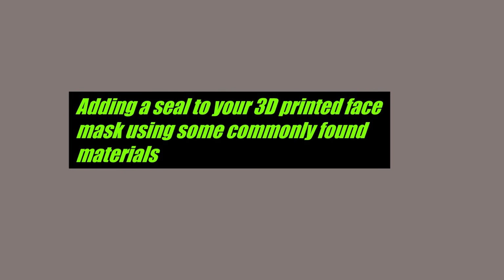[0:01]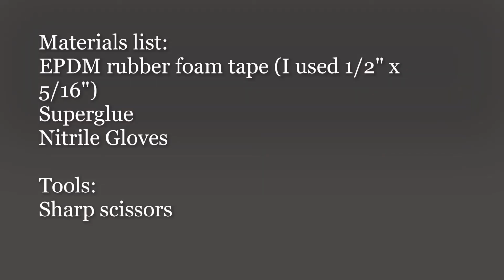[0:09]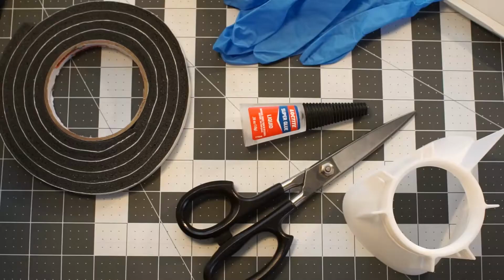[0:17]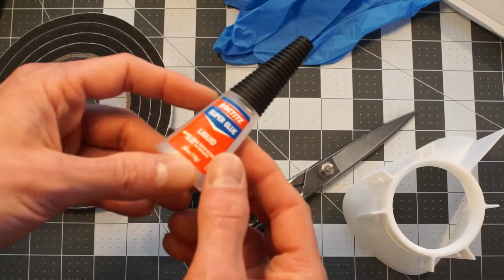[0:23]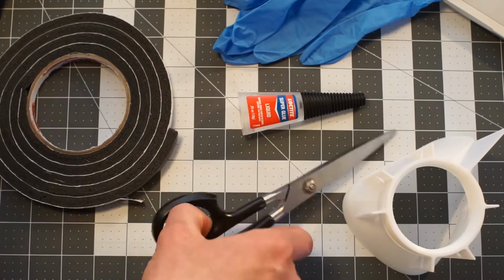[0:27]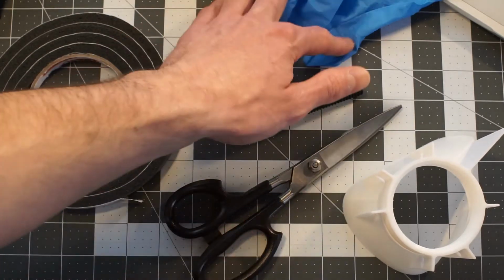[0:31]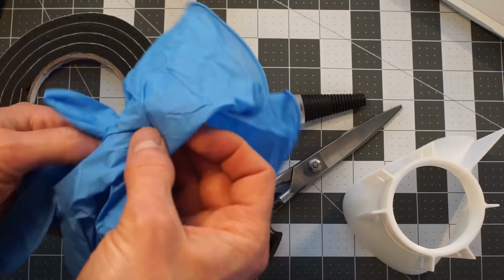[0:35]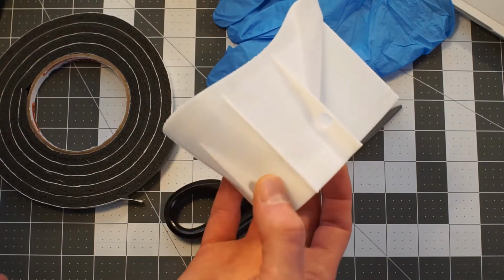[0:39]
Foam window and door seal, a cyanoacrylate glue like super glue or Cypox, a sharp pair of scissors, some gloves to help make sure that you and the mask don't become one, and of course the mask.
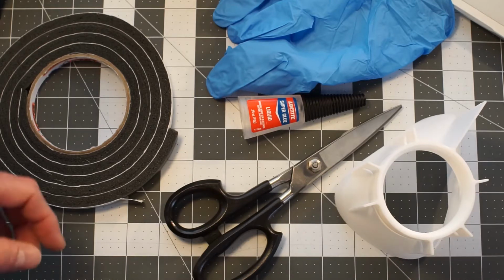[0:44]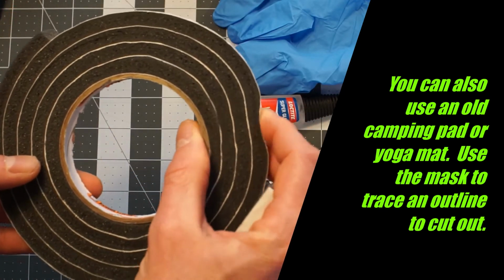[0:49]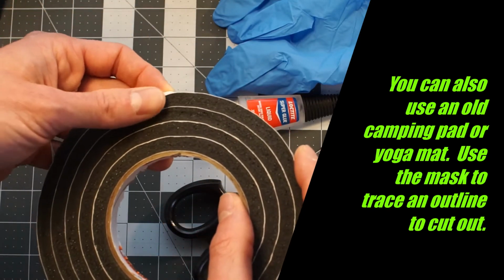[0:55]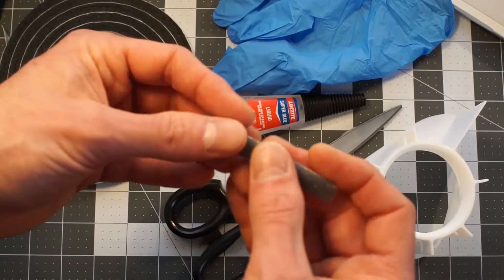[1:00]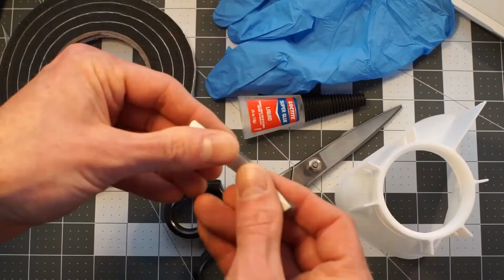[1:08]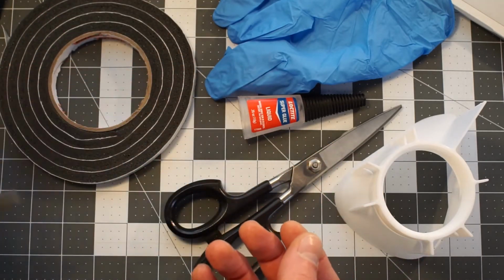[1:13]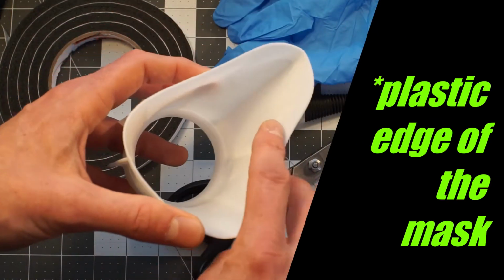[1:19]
Now a note on materials, there are several types of foam. This one here is EPDM rubber foam. It's a closed cell type of foam, and that's the kind that you need to keep any air from getting through. An open cell type of foam, like this, it's almost see-through. Feels like nothing. This stuff will let air go right through and will reduce the effectiveness of any type of seal. In fact, it would be even worse than having the plastic edge of the seal against your face.
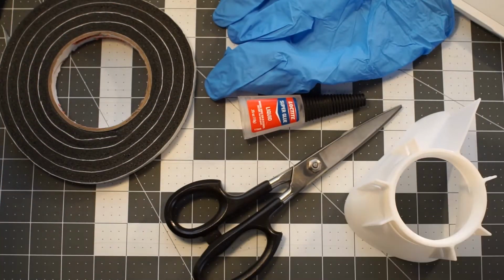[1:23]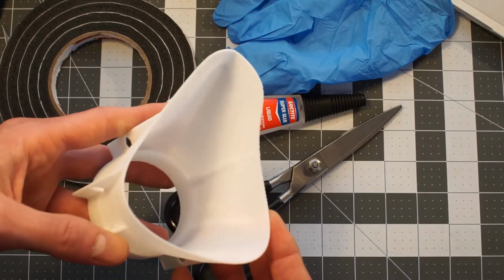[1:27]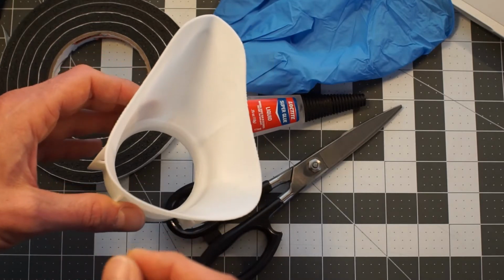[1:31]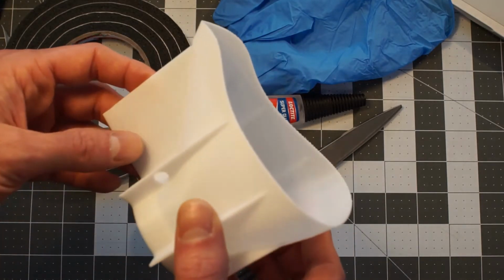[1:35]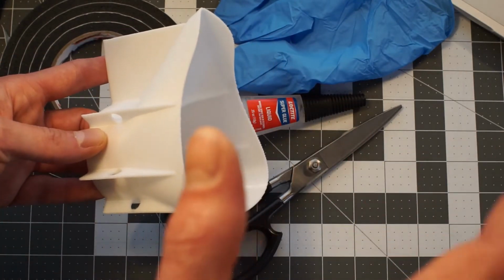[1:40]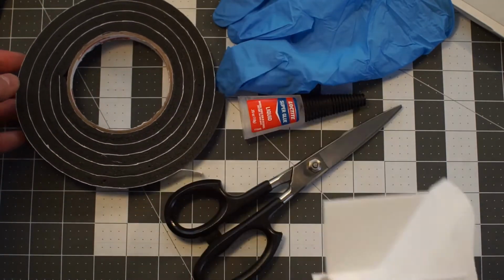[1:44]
So the first step is going to be to take the mask and make sure that the surface of it is clean. Make sure it's free of oils or dirt or anything like that, because we're going to be sticking the tape on there as well as the glue. We want to make sure that there is a good bond between the foam and the mask.
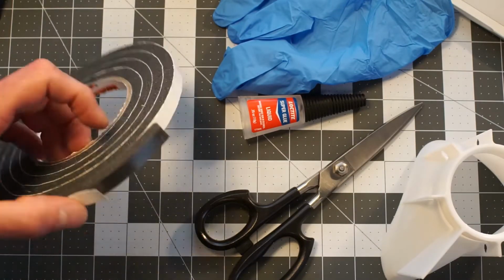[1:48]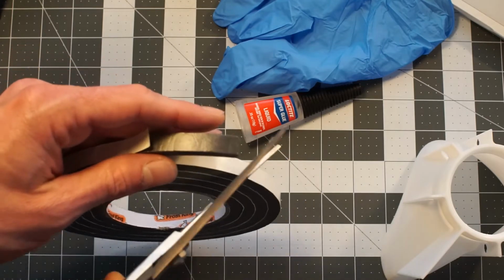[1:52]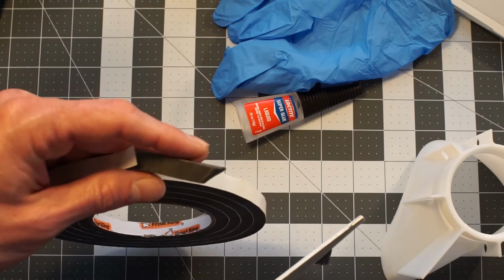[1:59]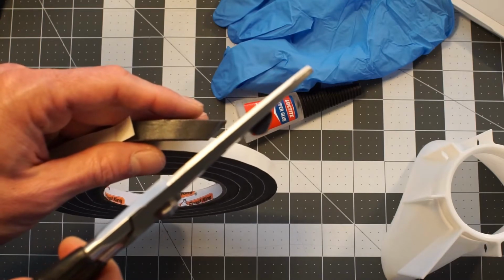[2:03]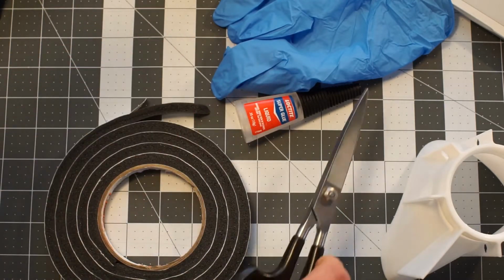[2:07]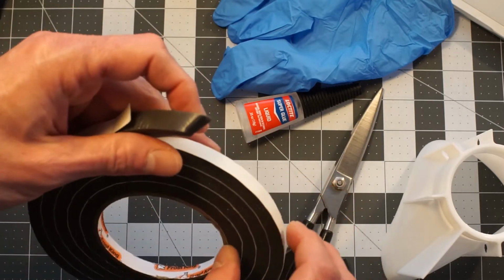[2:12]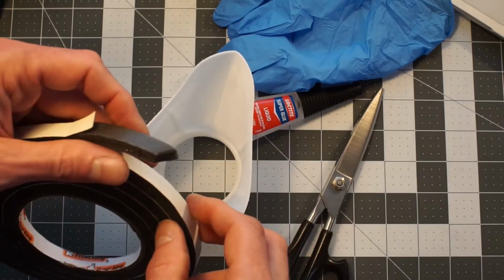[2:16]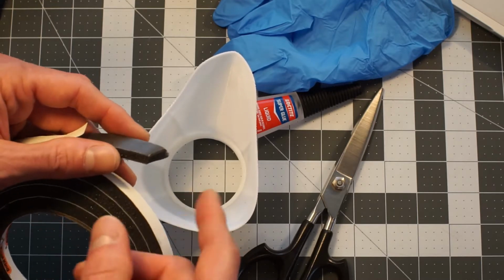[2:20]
Step 2. We're going to take the end of the tape and we're going to start by making a 45-degree cut. Doesn't have to be exact. Just go at an angle there, not perpendicular, just a little bit over like this. What this is going to do is allow for the seam that we're going to have here at the bottom to join in a way that when you put glue between the pieces, it's going to become hard. And what we don't want is that hardness there to, as your face conforms around it, to form a hole on either side that could potentially allow air in.
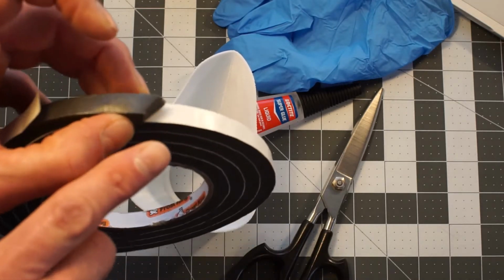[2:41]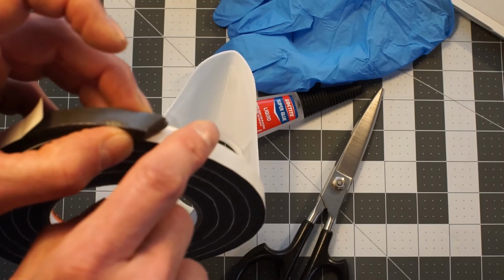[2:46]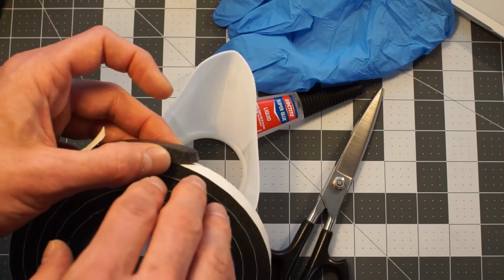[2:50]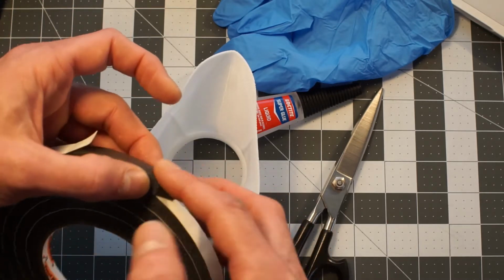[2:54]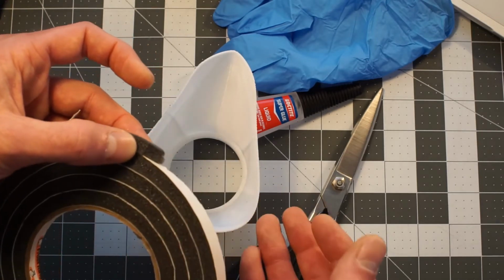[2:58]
By cutting it at an angle, we make it a longer distance to travel for any potential openings there for the air. And so this way there's more of a chance that your face conforms over this seam here and effectively seals you from the outside air.
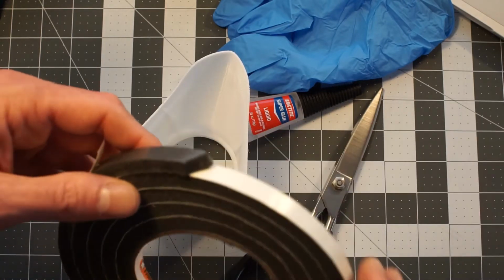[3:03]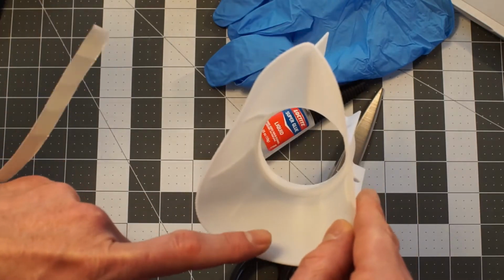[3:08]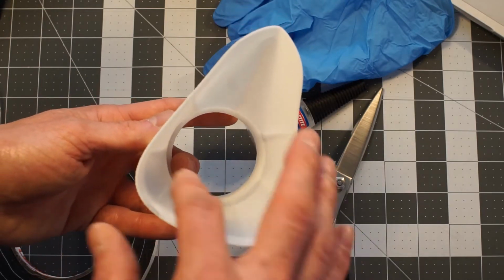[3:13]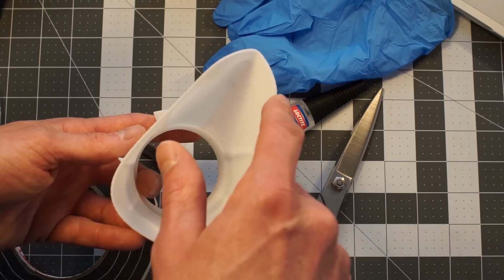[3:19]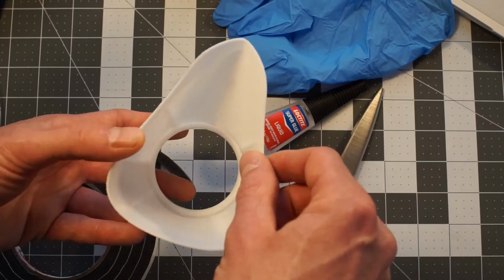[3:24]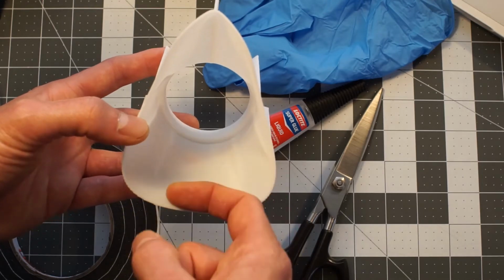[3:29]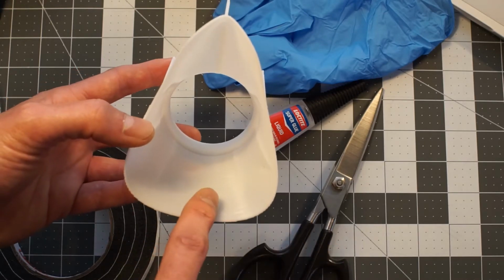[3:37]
Step 3. Take the foam, and we're going to start here at the bottom of the mask. The reason being, faces have a lot of different shapes to them, and around the nose here it can be kind of sharp. Maybe you have some high cheekbones, they're going to push in extra hard on the edges. But generally people's bottoms of their chins are pretty flat. We want that to be, if there's going to be a seam, we want it to be in an area where there is nice even compression along where the seam is. So we're going to start at the bottom.
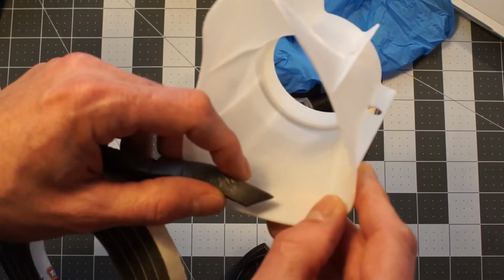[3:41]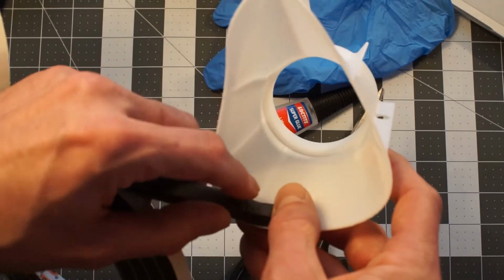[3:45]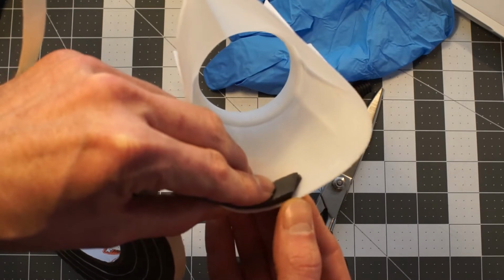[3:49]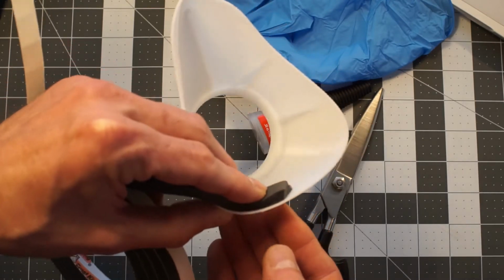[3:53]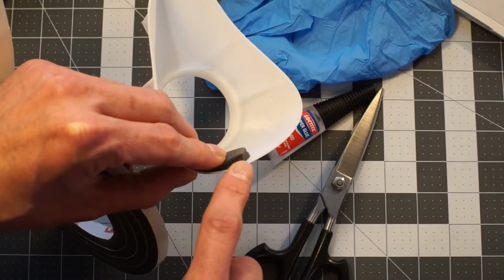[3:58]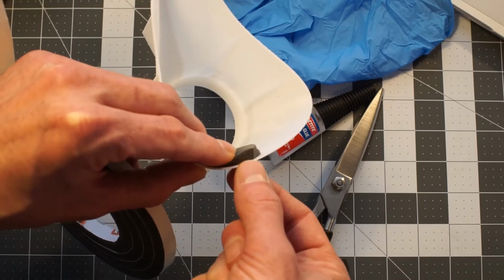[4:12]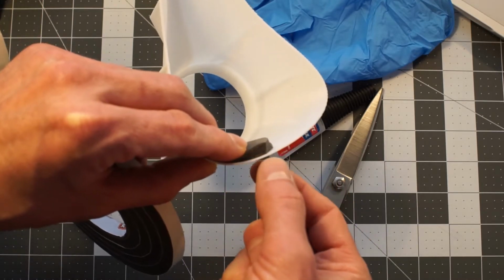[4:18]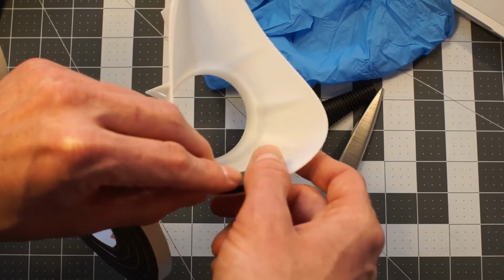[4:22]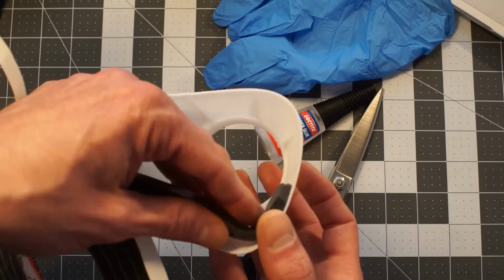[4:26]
And we're going to put it almost to the edge. We're actually going to leave a little bit of a lip, just a tiny one. And the reason being is we're going to take our glue and we're going to be gluing along this outside edge here. And that lip is going to help to keep the glue in this sort of valley between that tiny lip and the piece of rubber here to help for the adhesion so that it's not dripping down the edges or going anywhere else. It's just creating a nice little seam there, almost like in welding, between the materials that you're joining. And so we're just going to go around.
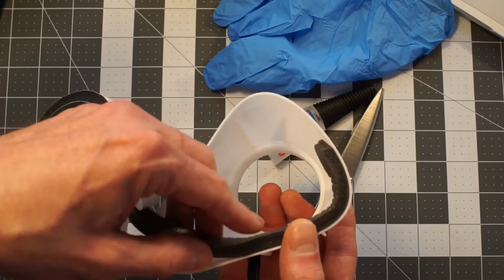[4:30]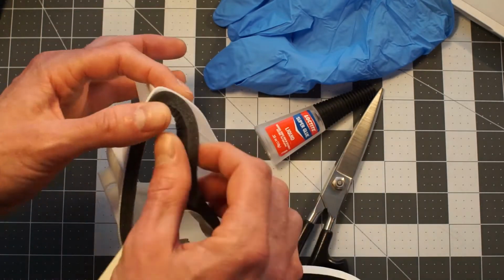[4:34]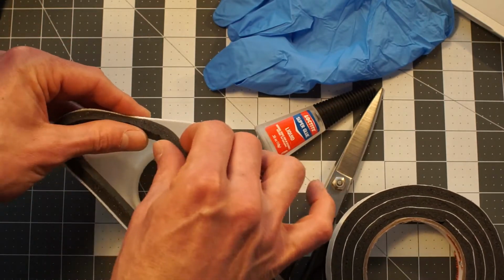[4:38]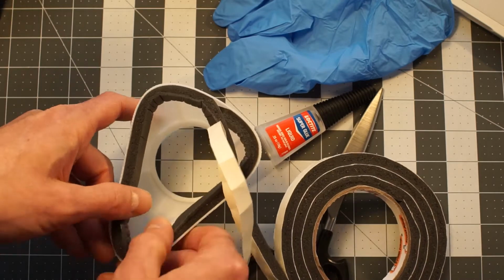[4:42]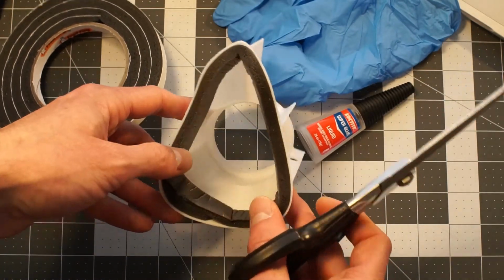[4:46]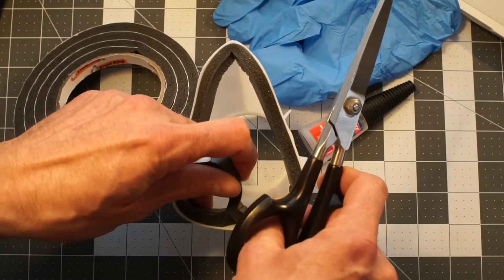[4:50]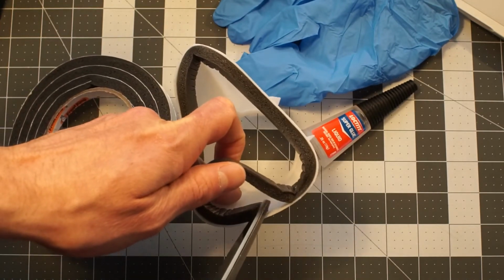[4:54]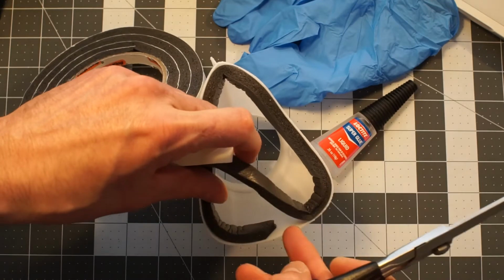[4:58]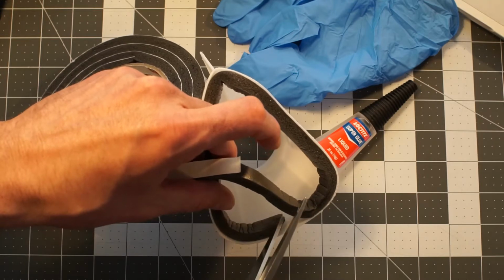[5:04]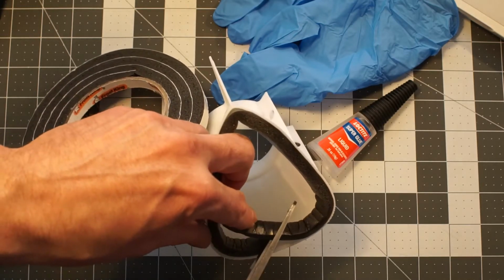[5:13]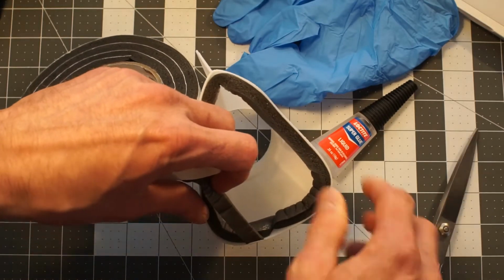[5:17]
Next, we're going to take this piece and we're going to cut it so that it matches this here. We're just simply going to, now that we've come around down to the bottom, before we make it to here, take our scissors, line them up with this edge here at this angle, the same angle here that this piece has. I'm going to take this piece, I'm just going to come straight down.
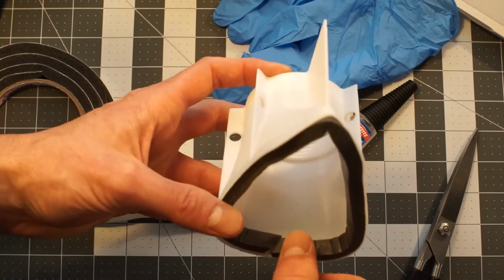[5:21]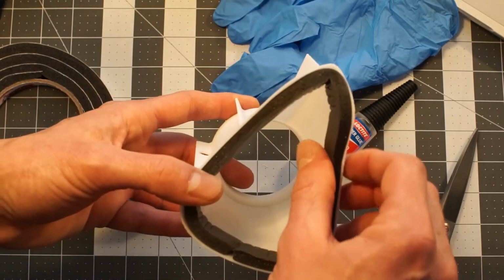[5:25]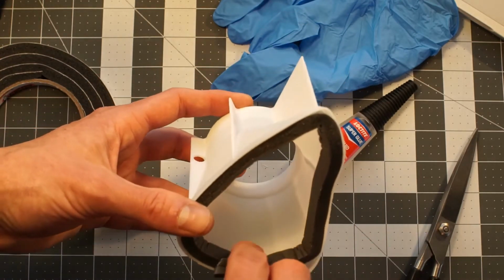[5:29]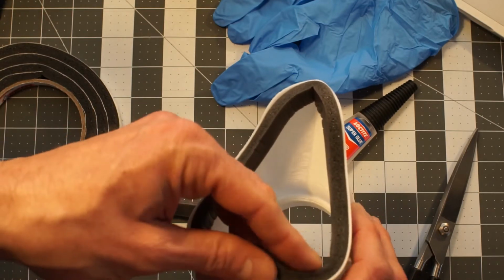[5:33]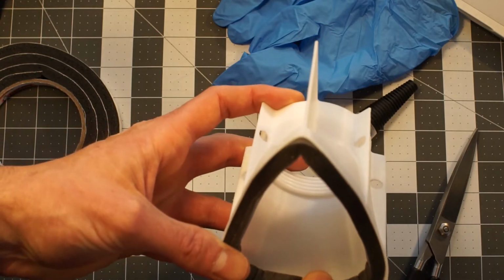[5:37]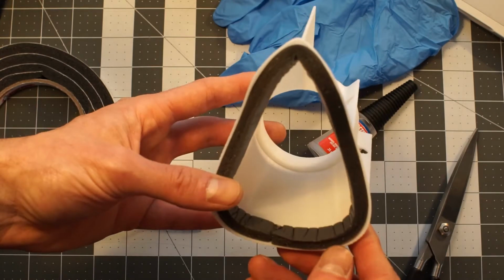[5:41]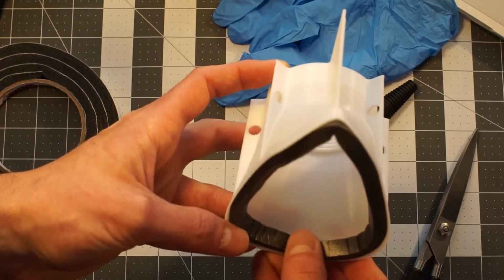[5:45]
Now, there may be a little bit of a gap, or maybe it'll be too long. This piece is pretty stretchy. This material is great in that it's got a little bit of give. And so we can also just kind of work it a little bit to ensure that the pieces line up nicely for where we're going to put the seam. Just like that.
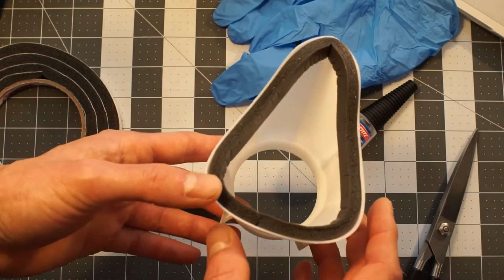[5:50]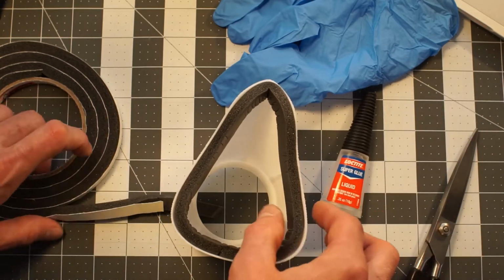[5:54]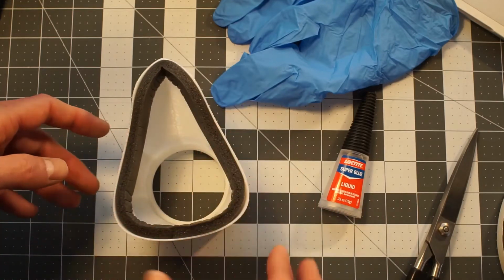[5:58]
The next thing we're going to do is we're going to take our glue, get this out of the way, put on our gloves.
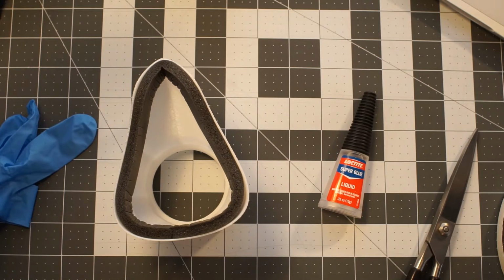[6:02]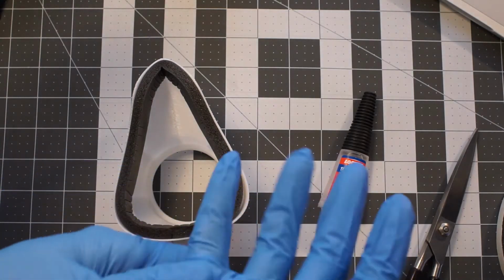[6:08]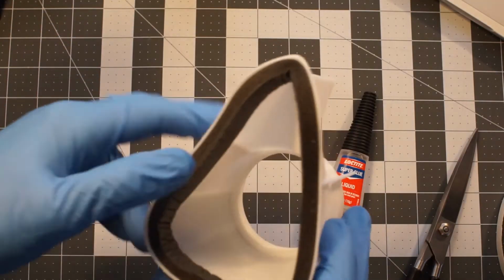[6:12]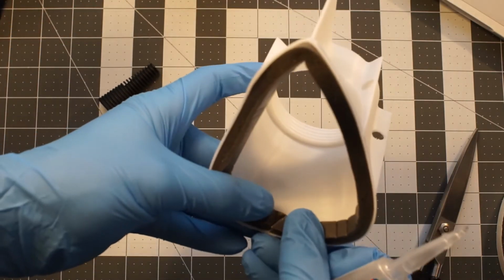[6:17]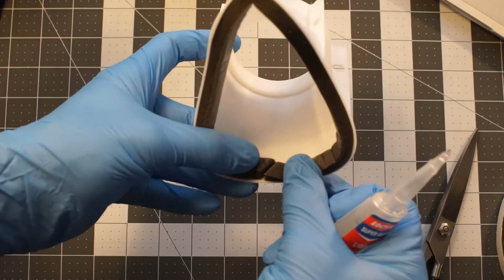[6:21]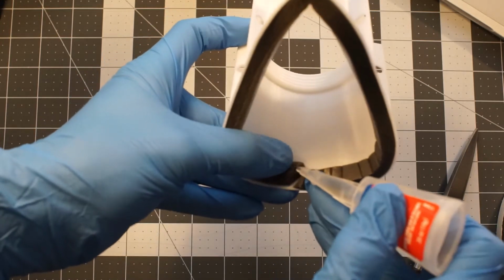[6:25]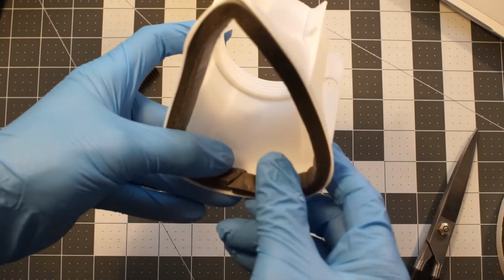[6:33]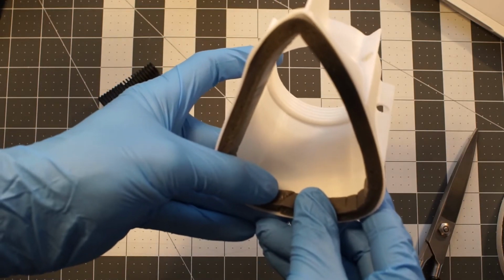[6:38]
We're going to start here at the seam. We're going to pull it apart a little bit like that. Put some glue in there. Push that together. We're going to hold it in place for at least 10 seconds.
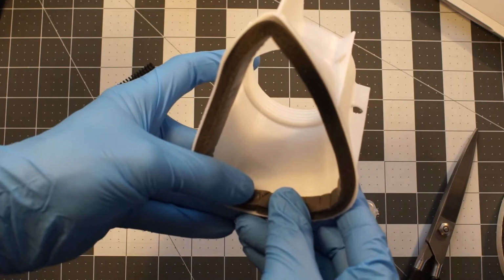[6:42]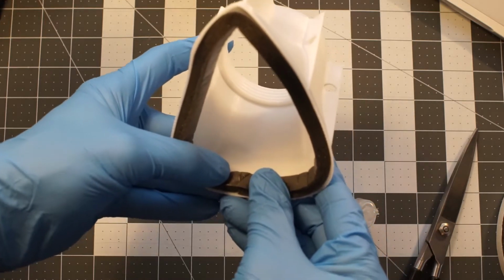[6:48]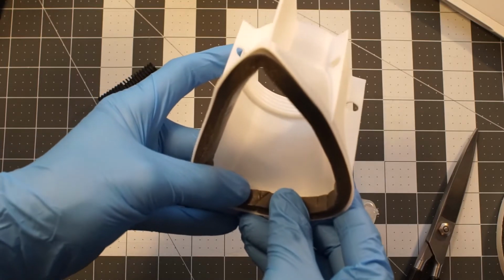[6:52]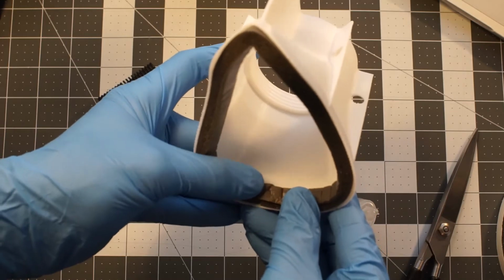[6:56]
Super glue usually takes about 10 seconds to get a nice set in. We'll hold it there for a little bit just to make sure that it doesn't accidentally separate on us or anything. Just try to make sure that those are even at the top there where you've bonded it.
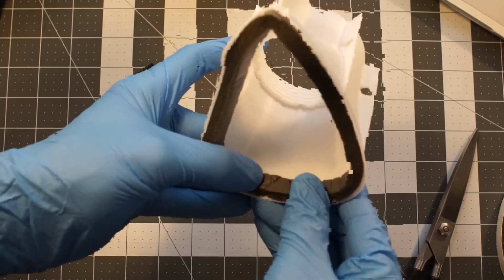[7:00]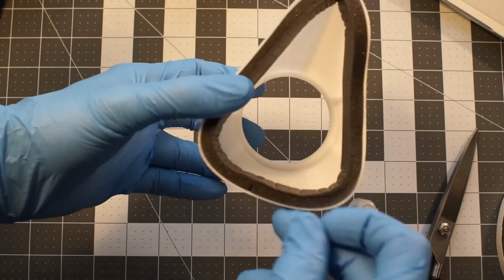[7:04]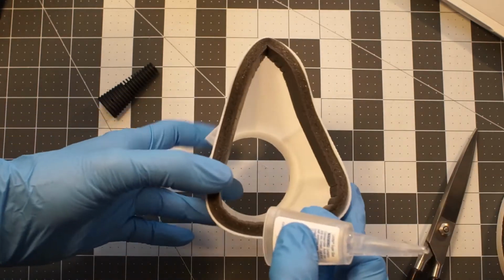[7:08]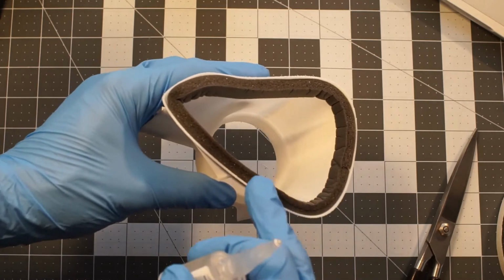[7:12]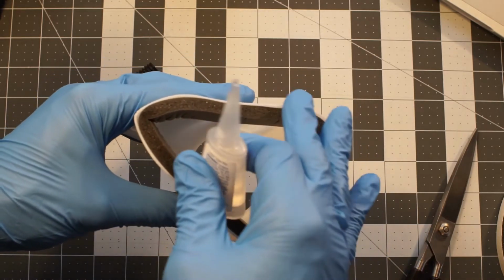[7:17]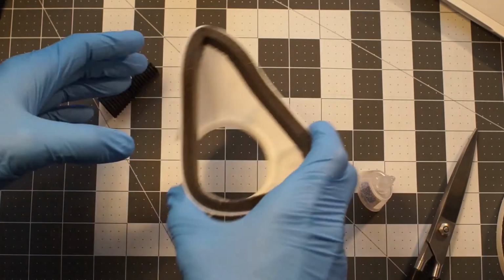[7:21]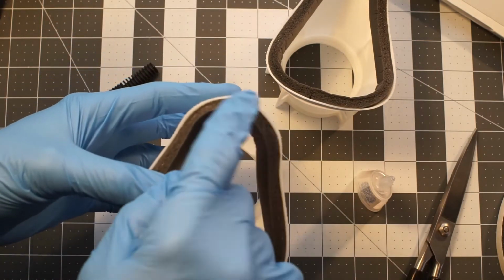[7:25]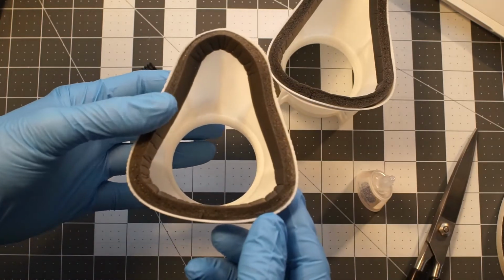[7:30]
The next thing we're going to do is go around this lip here with the glue, and we're going to apply a bead. And what that's going to do, I've already got one done here, is make for a really nice strong seam all the way around the outside edge.
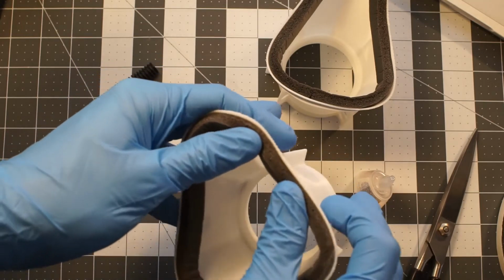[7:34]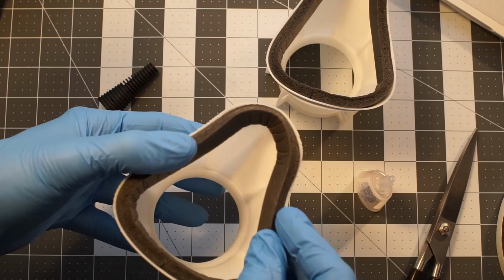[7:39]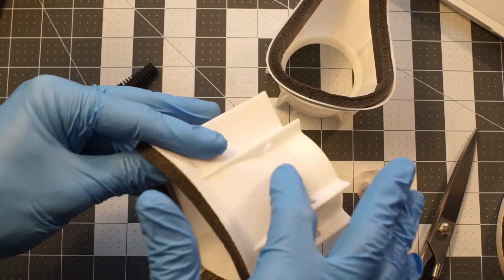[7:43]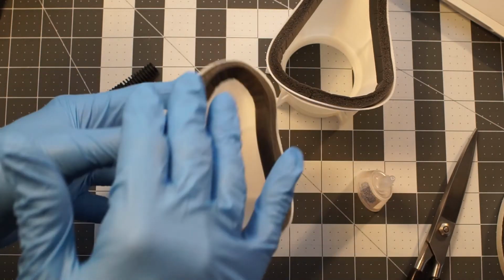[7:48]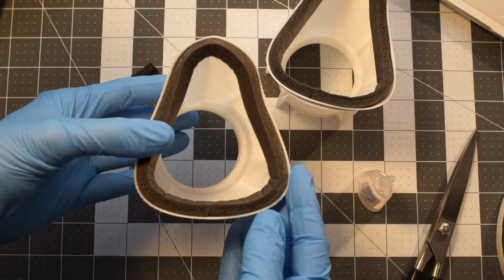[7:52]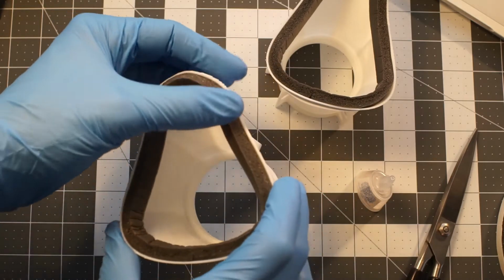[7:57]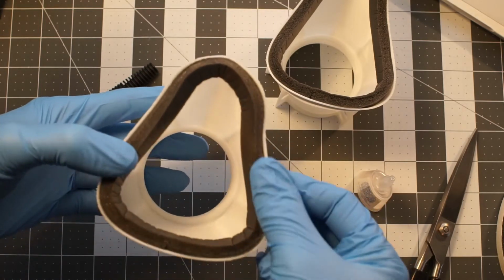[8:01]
And this will prevent any pull off, because again, that adhesive that's on this foam strip already doesn't do a good job of sticking to the plastic. So this will help to ensure that the foam seal stays in place and isn't suddenly pulling off when you're putting this on your face and applying pressure. And just help to ensure that you've always got a good seal between the mask and this foam seal here.
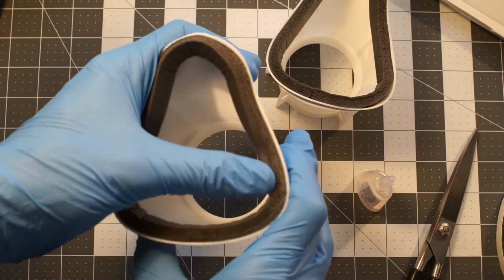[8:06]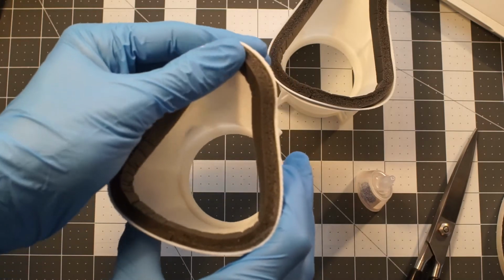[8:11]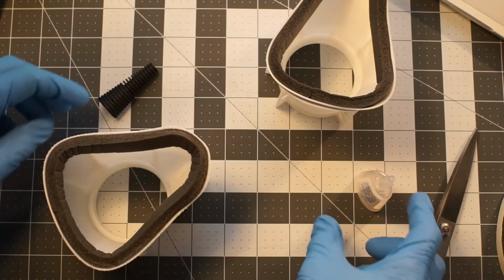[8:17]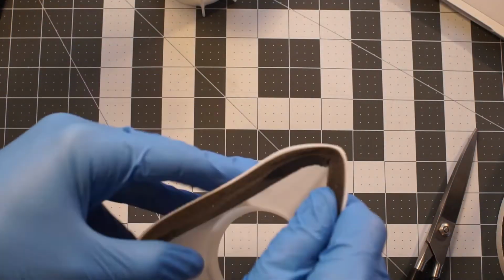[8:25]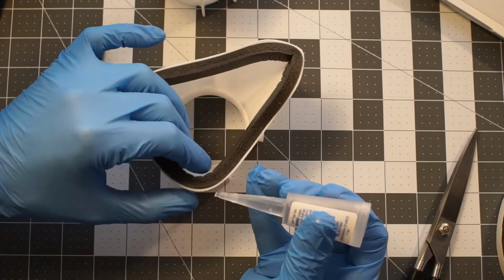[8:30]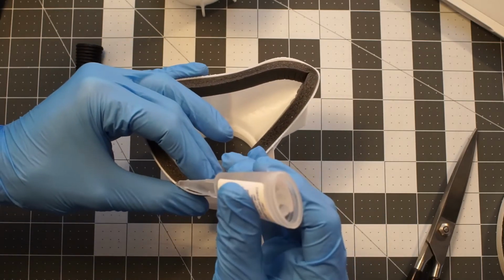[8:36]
You can see I can pull pretty hard on it. It's not going anywhere. It's nice and tight to that edge. Make sure that if there's any lift off that you push it back. And as you apply the glue, you may have to hold it there to help it to bond and stay tight to the side.
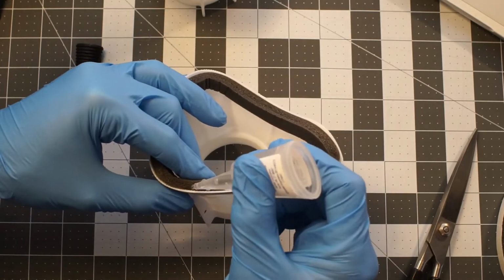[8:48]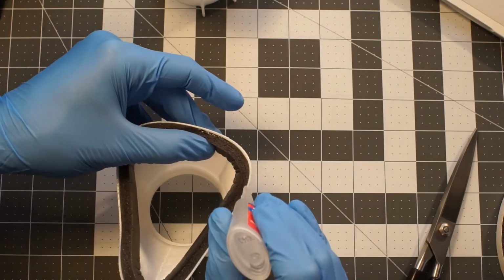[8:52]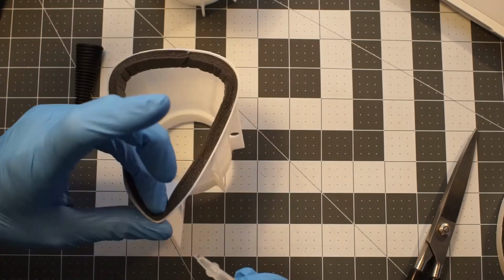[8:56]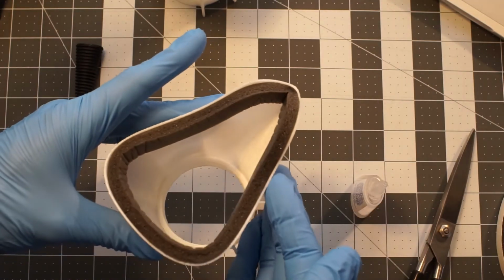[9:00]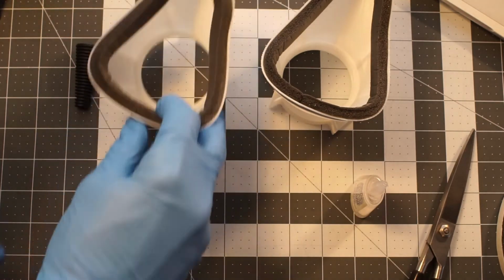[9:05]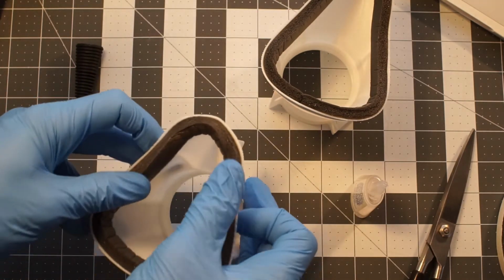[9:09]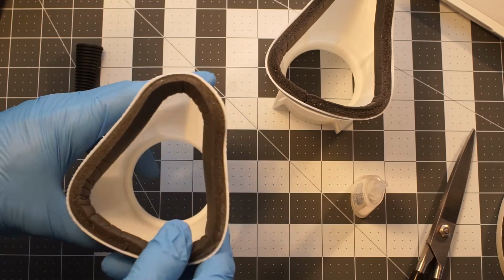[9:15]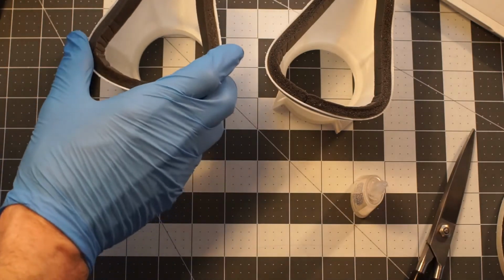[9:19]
And then you'll let that sit and cure. And then it's got a nice strong bond to help keep the seal in place and comfortably fitted to your face. Now your 3D printed mask has a comfortable, airtight seal to help prevent infection from unfiltered air.
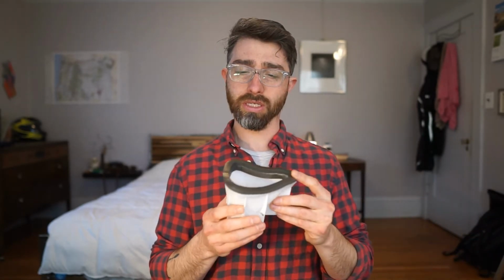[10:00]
One thing I forgot to show in that last part of the video is a double up method. Some of these masks are going to have the facial interface here with a bit of a more narrow angle to them. Some of them will flare out more, and this type of seal here will be enough to press against your face and be comfortable and seal well. But if they have a steeper angle, then you can do this double up method.
And I mean, look at this here. This is pretty comfortable. Basically all I've done is I've just taken some more of this tape here, and again, starting at the bottom, worked my way around. And what you can do is you can even leave a little bit of a lip, kind of like we did with the last one, where you create sort of a valley that you can have the glue just sit nicely between the rubber and the plastic. Again, just helping to ensure that this isn't going to go anywhere. It's going to stay in place, be well sealed.
And now with this doubled up tape here, it's pretty comfortable. I'm going to push it pretty firmly against my face, and I'm only feeling the foam. And when I do that, even with a beard, I don't know if you can see, it's still trying to pull against my face and seal really well, and that's exactly what we want. We want it to be comfortable, we want it to seal well, so that it's keeping people safe.
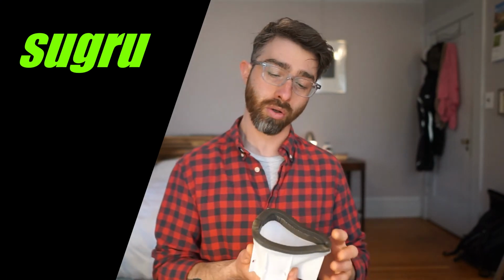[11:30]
You know, and there's other ways too. This is just the way that I came up with, and I think it's the easiest with those common materials, but there are other ways to do it. You could use some Sugru putty, which is this flexible putty that you can mold, and you could actually make a very custom fit to your face that way. You could use some silicone. You could even print a lip seal if you have an SLA printer with flexible resin. That's one way to do it.
I encourage you to experiment, to try different ways. I think that this way works well, but it's not meant to be the end-all solution, and you never know what you're going to come up with if you do that experimentation process. You might really surprise yourself.